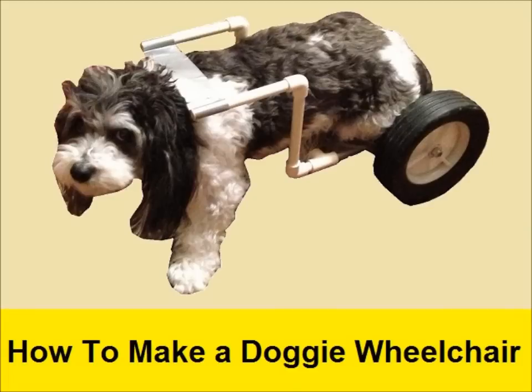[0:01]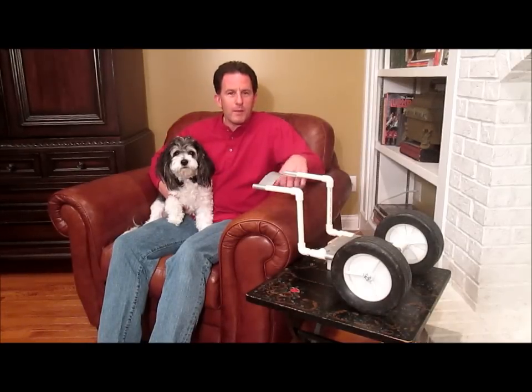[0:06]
Hi, I'm Lou and this is Cody, and today we're going to show you how to make a doggie wheelchair. Here are the major parts we'll need.
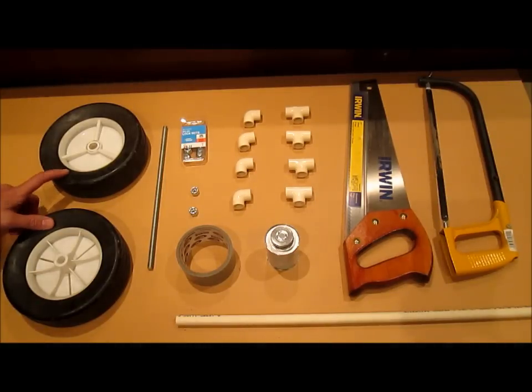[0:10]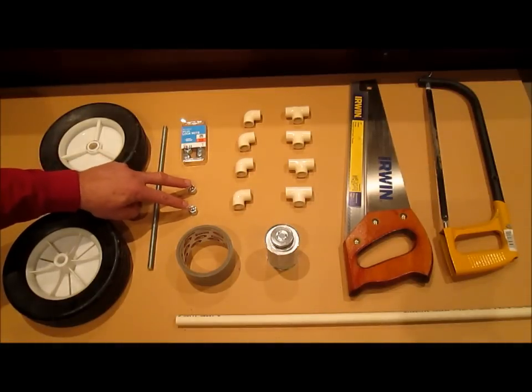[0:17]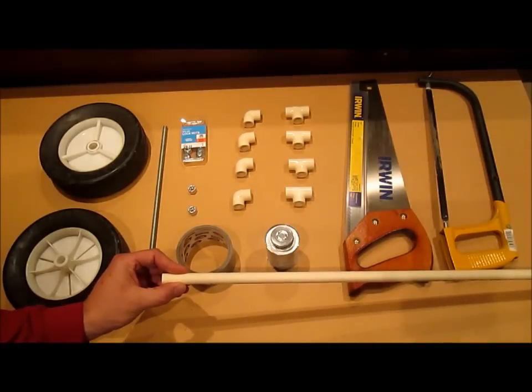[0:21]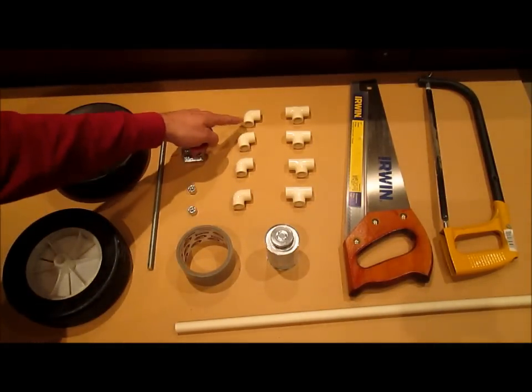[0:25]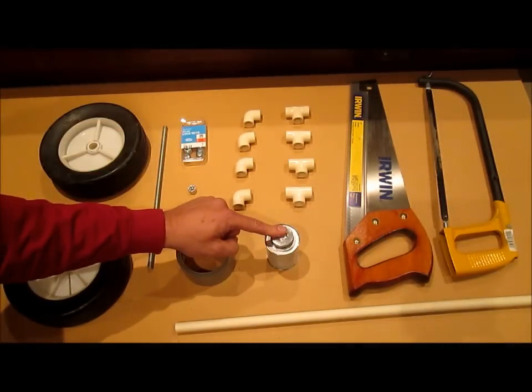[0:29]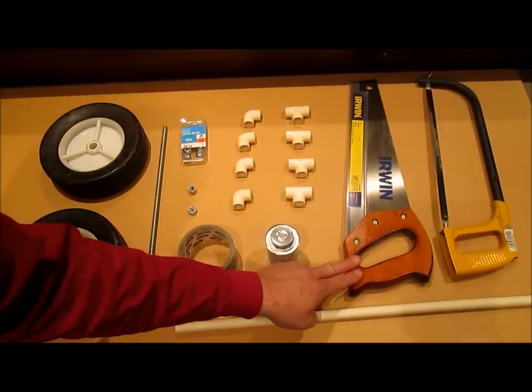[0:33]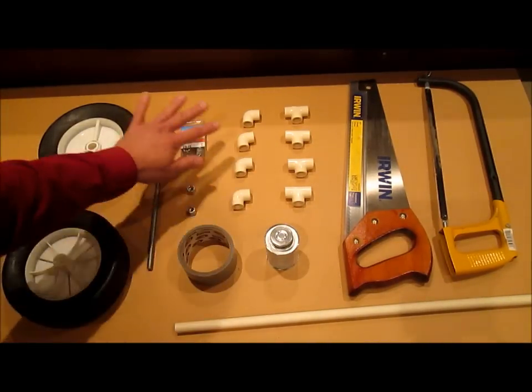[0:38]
Two lawnmower wheels, a 3/8 inch by 1 foot long threaded rod, two nylon insert 3/8 inch lock nuts, a 5 foot section of 1/2 inch CPVC piping, four elbows, four tees, CPVC cement, roll of duct tape, and a handsaw or a hacksaw to cut the tubing. All these parts should cost less than $25 at the hardware store.
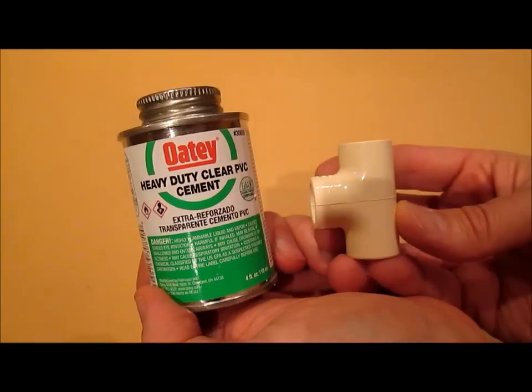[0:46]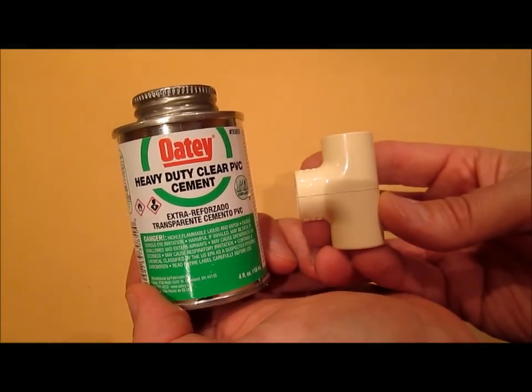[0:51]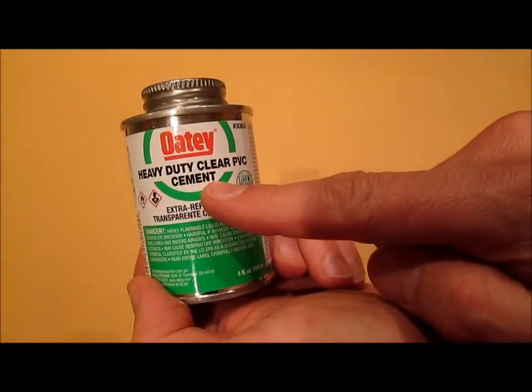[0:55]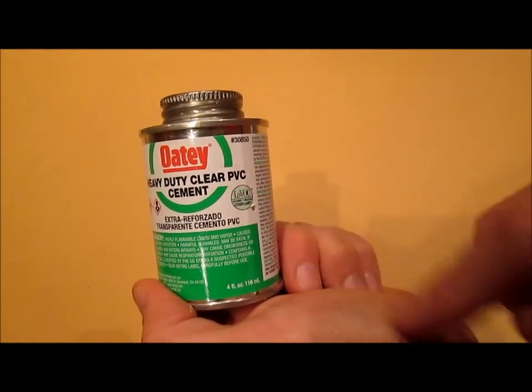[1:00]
You'll probably want to buy two sets of connectors. They're really cheap and you'll probably make the first chair the wrong size. Actually, you should use CPVC cement for CPVC piping, but it's orange and it kind of looks funny on the pipes. So I'm using PVC cement and it holds almost as well and it's clear.
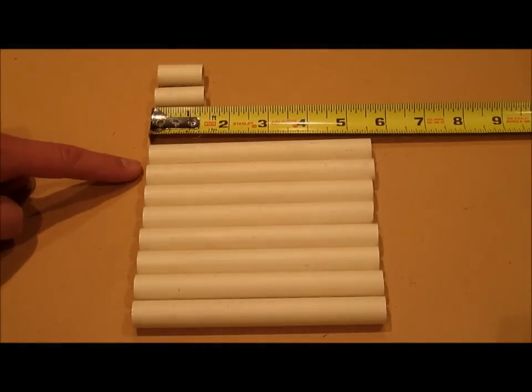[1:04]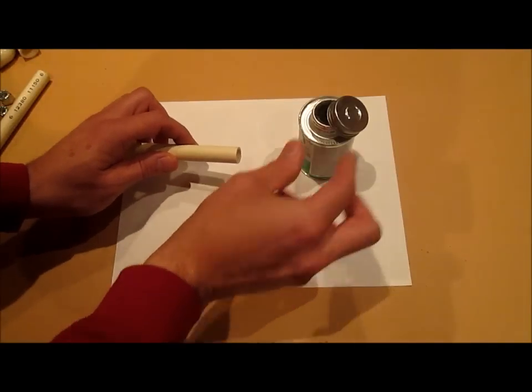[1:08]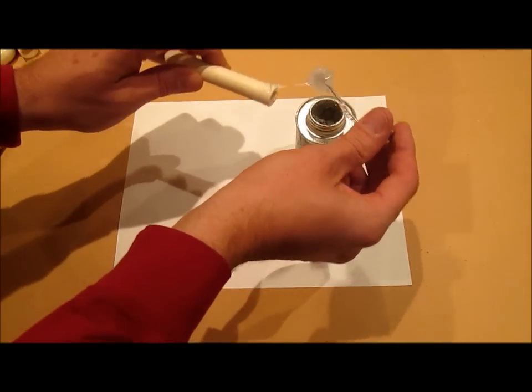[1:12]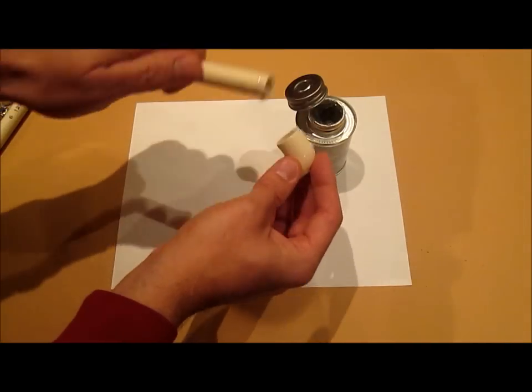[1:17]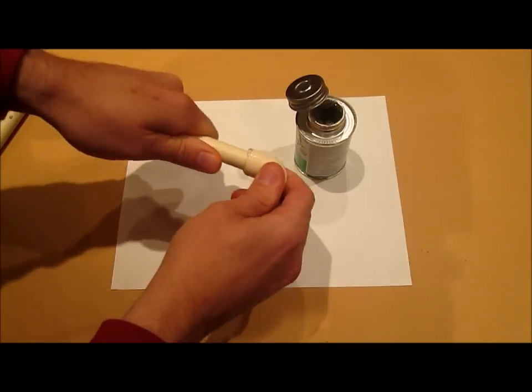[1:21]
Start by cutting 8 pieces of tubing 5.5 inches long and 2 at 1.25 inches long. These pipes stick together like Tinker Toys, but you just put a little bit of glue on this one and on the inside of this one, stick them together, twist a little bit and let it dry. Within 30 seconds it's done.
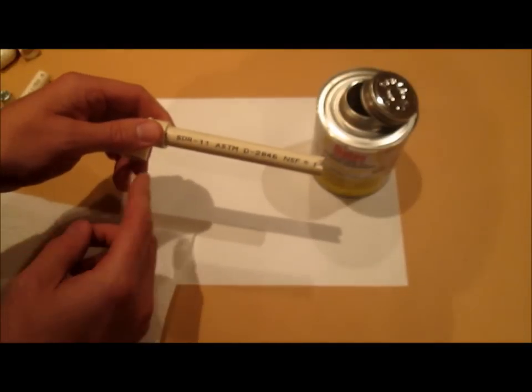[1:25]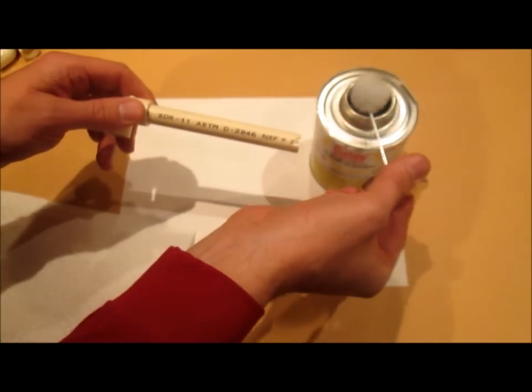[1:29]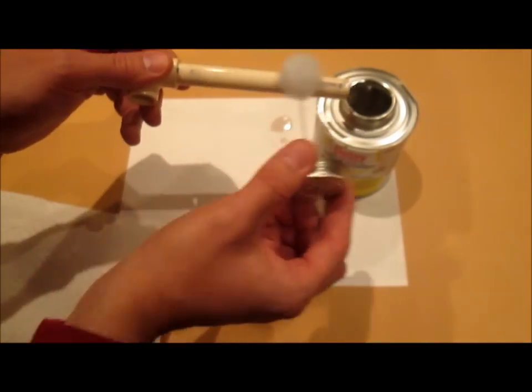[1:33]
If you want to make your chair look better and you don't mind spending a little bit more money, you can get this clear cleaner. You rub it on there and you can wipe the lettering right off.
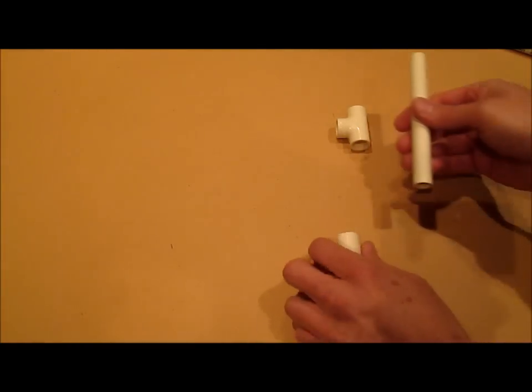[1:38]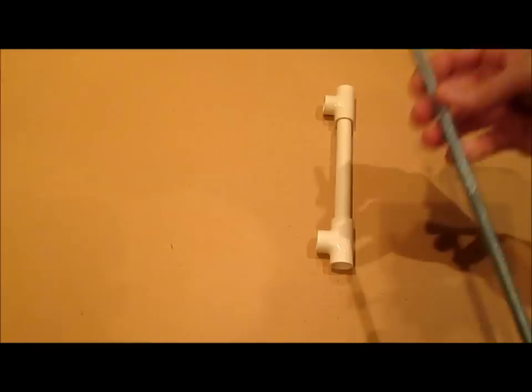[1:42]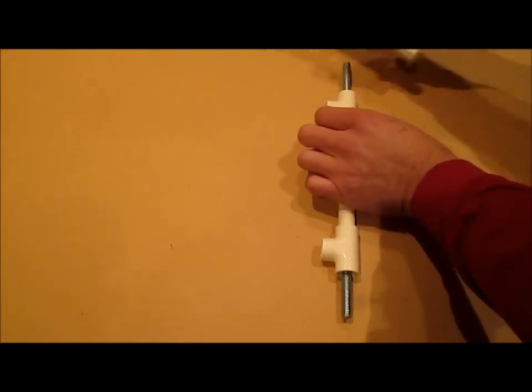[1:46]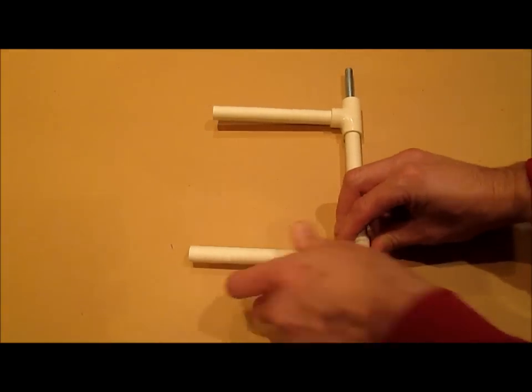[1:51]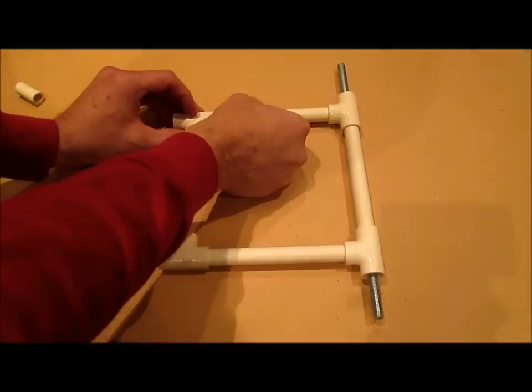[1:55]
Start with two T's and connect them with one piece of pipe like this. That is going to be eventually your axle. Now go forward with two more pieces here and here, and then two more T's facing inward like this. Put a pipe between them.
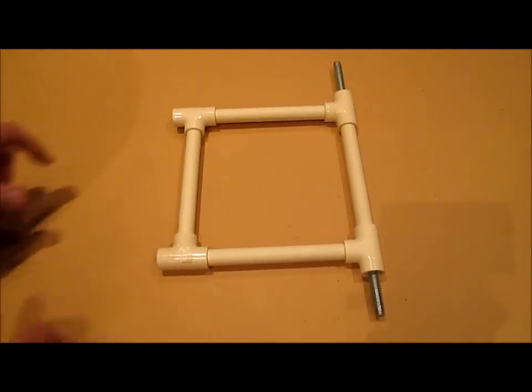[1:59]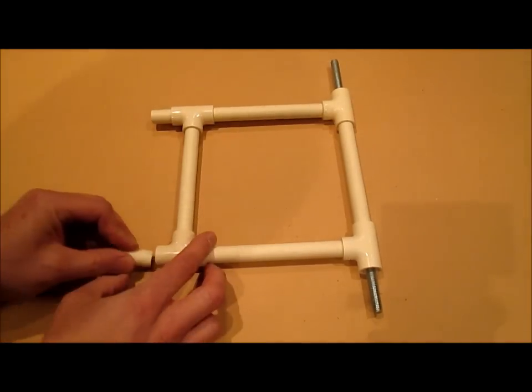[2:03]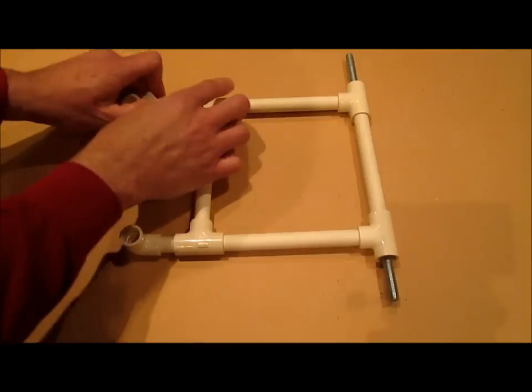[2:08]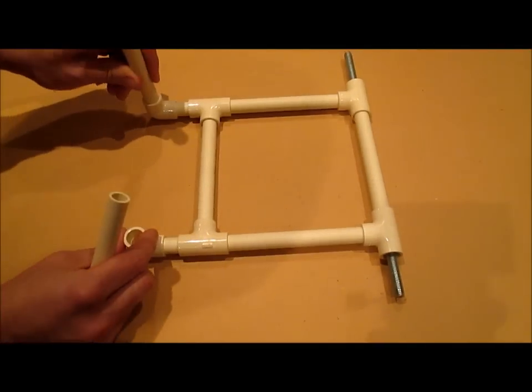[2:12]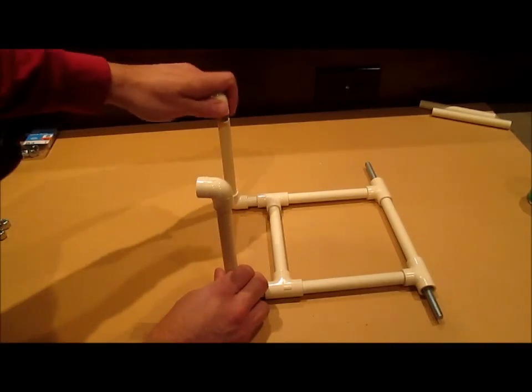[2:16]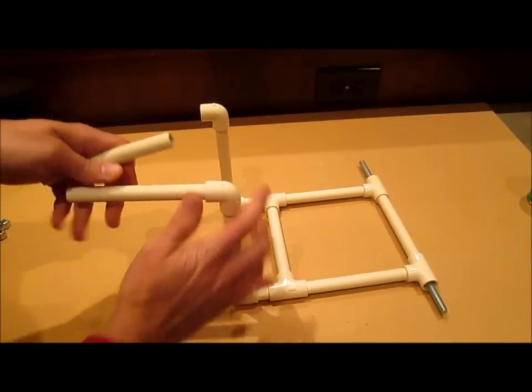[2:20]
Put your two little pieces here and here, followed by elbows turning up, and then two pieces going up, two elbows, and then lastly two pieces going forward.
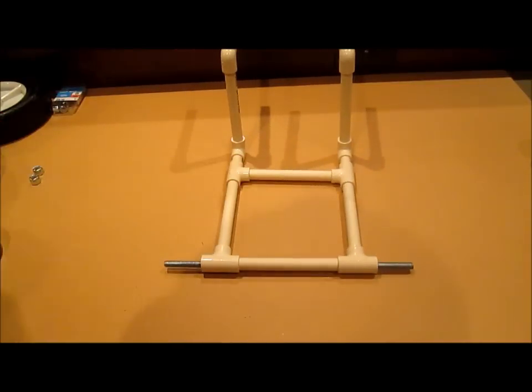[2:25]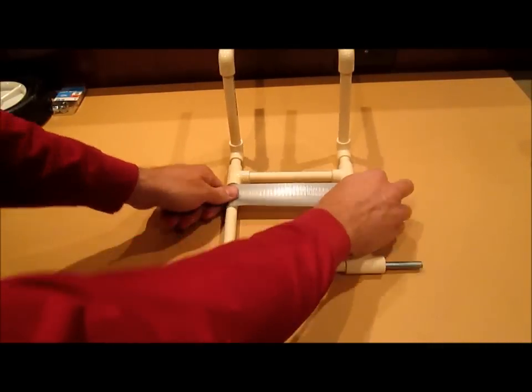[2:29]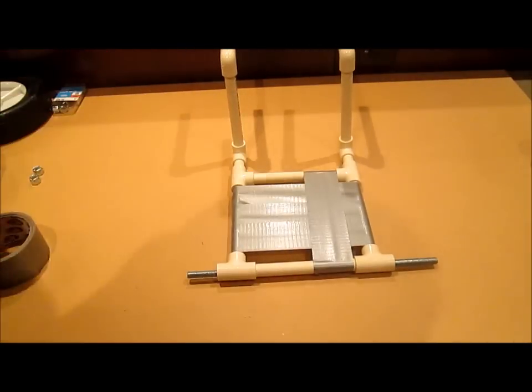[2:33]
Now we need to make the seat. Put three pieces of duct tape across like this and wrap them around, and three more this way in the same way. By the way, there's a style of duct tape for every dog.
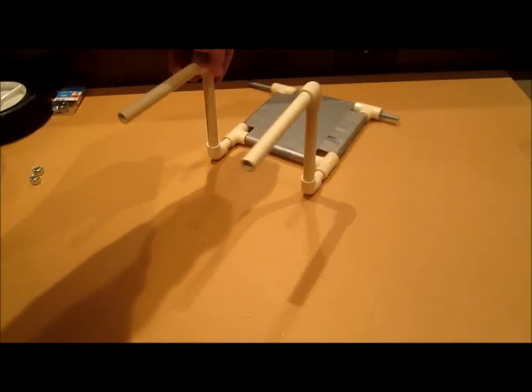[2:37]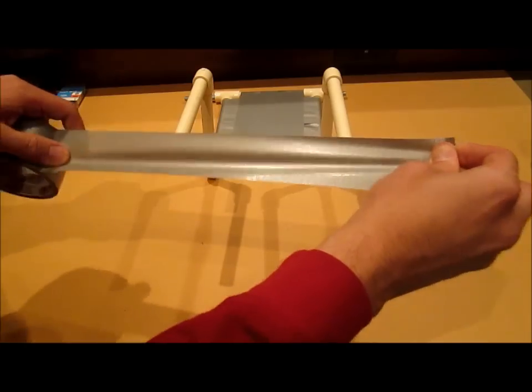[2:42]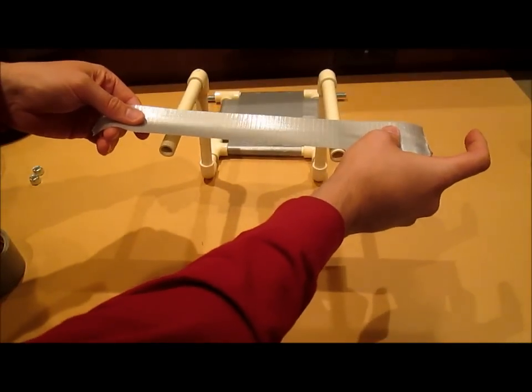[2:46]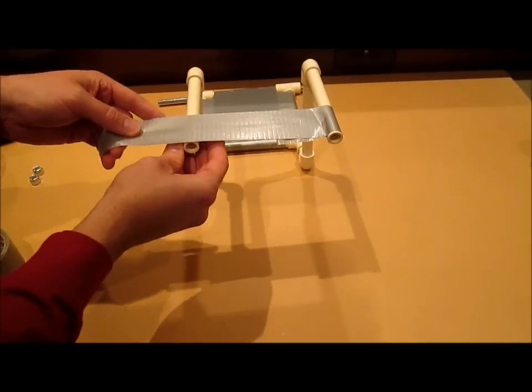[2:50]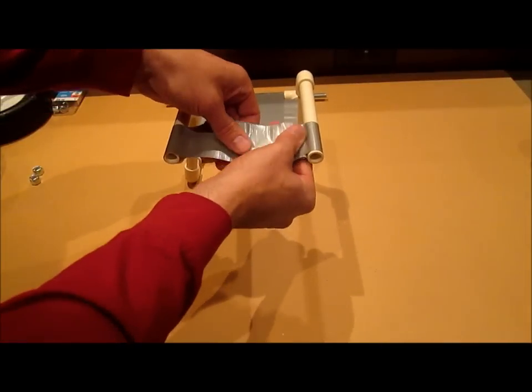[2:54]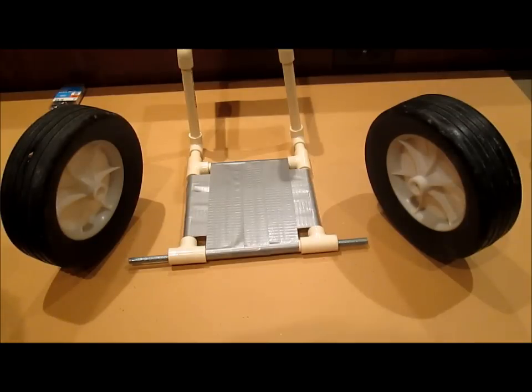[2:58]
Now we make the top strap. Simply take another piece of duct tape, much longer, and wrap it all the way around on both sides. Put one more piece underneath to make sure you cover all the sticky so you don't get anything in the dog's fur. And now it's time to put on the wheels.
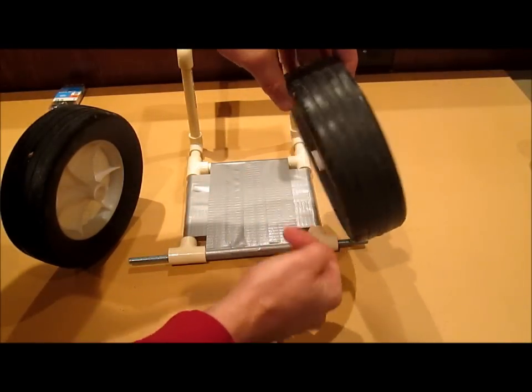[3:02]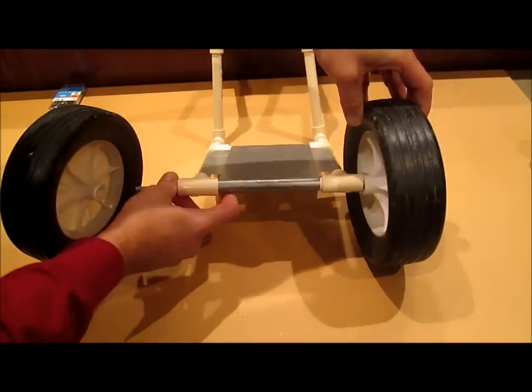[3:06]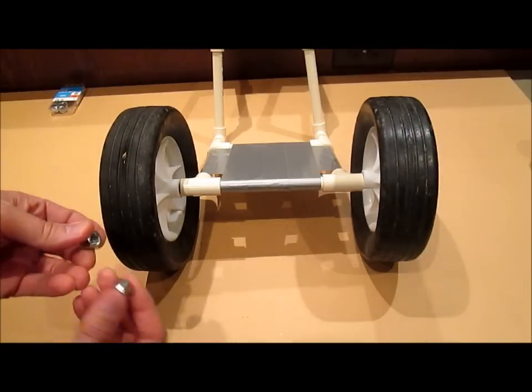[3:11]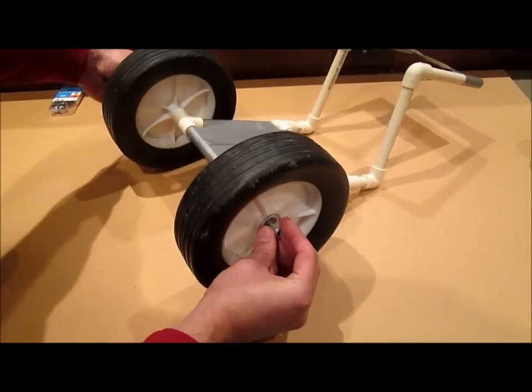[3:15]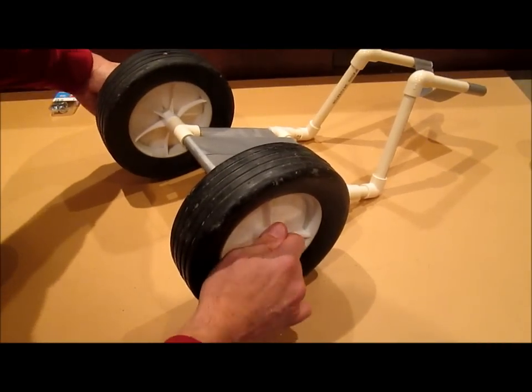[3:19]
You want to have the sticky out part of the wheel towards the inside and the more flat part towards the outside. Just put them on like this, like that. And then you take your lock nuts and screw them on each side, and tighten those down a little bit with a wrench. And there's your doggy wheelchair.
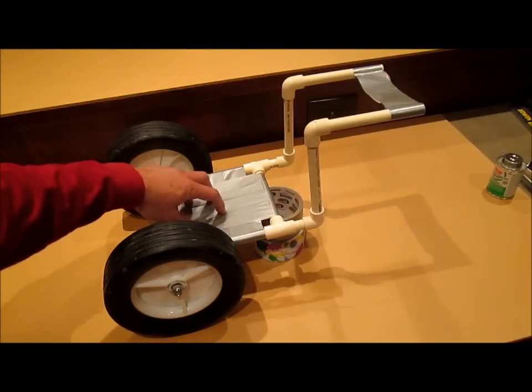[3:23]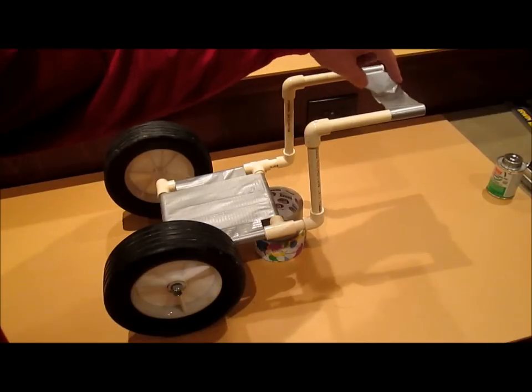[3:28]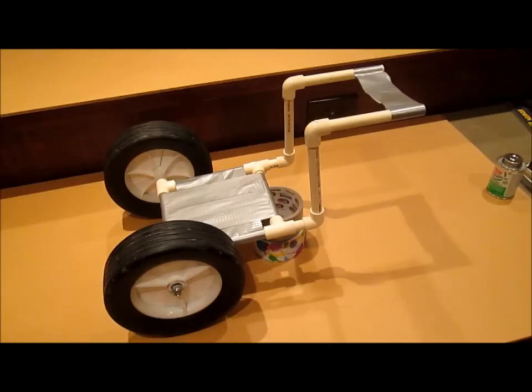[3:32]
He sits here and his head is right here. And you'll have to use a piece of string to tie around this into the back of his collar so it follows him along. Try it on your dog, and if it doesn't fit, you can easily make another one because the elbows and piping are so cheap.
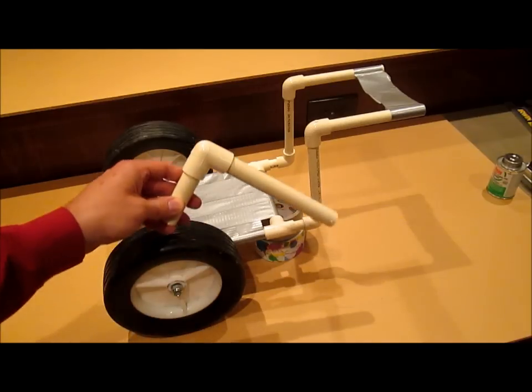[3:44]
If your dog is really small, they sell wheels that are about half this size. If your dog is really big, you might want to step up to the 3/4 inch size piping.
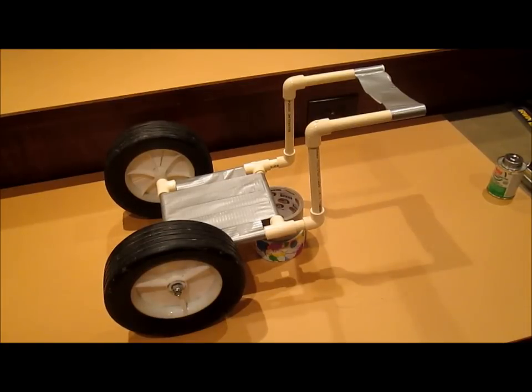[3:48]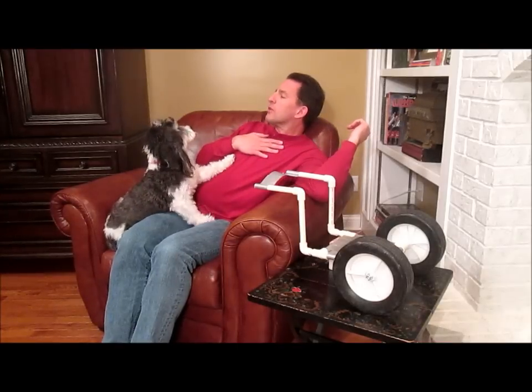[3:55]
What do you mean you want your own YouTube channel?